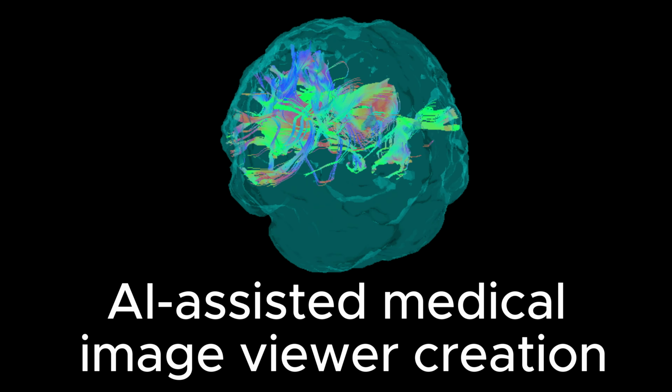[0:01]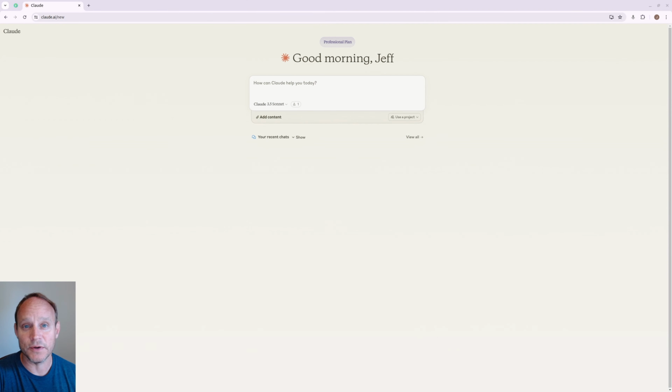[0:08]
Alright, so today I'm going to go over creating a simple medical viewer using Claude AI. I found this to be extremely helpful for code generation and code debugging. About 15 years ago I created a medical imaging program to look at some DICOM images, scroll through them and do some basic image manipulation.
I found that some of the other software packages at the time weren't very helpful and I wanted to add some extra functionality, and it was extremely difficult to get anything running. I had used C++ and some software packages called ITK, VTK, and Qt, which were very powerful but very difficult to get working correctly. And so today I'm just going to show how easy it is to get something up and running very quickly, even if you don't have a lot of experience with coding.
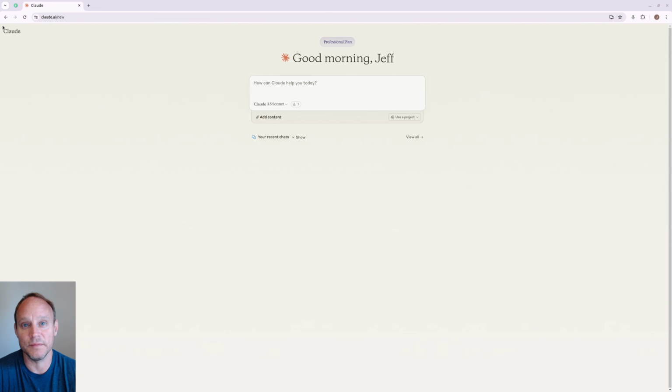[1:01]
But I'm going to be using my Ubuntu setup today, and Claude tends to default to using Python for most of its recommended code, or something like HTML or React if you do web development. But this will show today how we can get something very simple going and how you can get an idea up and running pretty quickly.
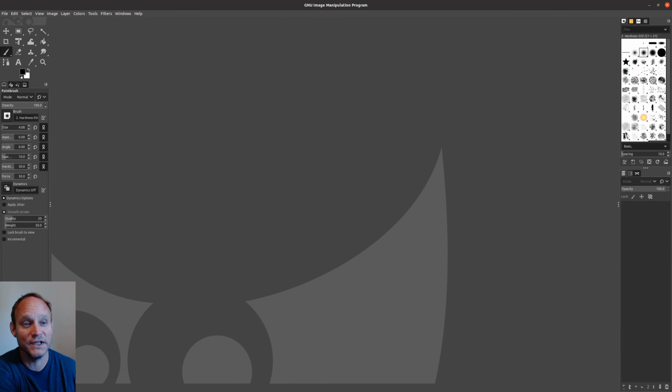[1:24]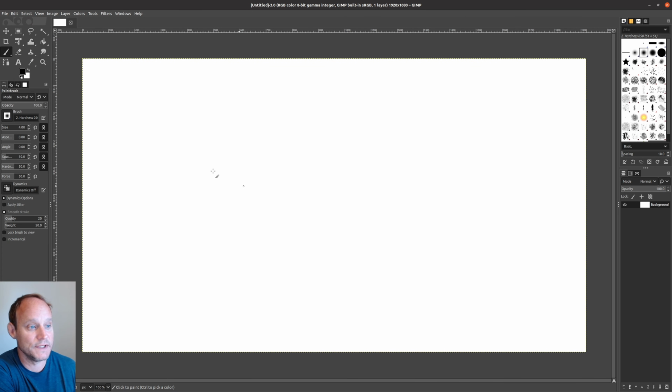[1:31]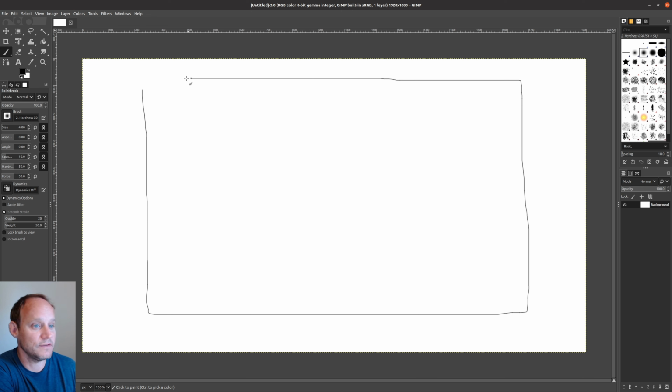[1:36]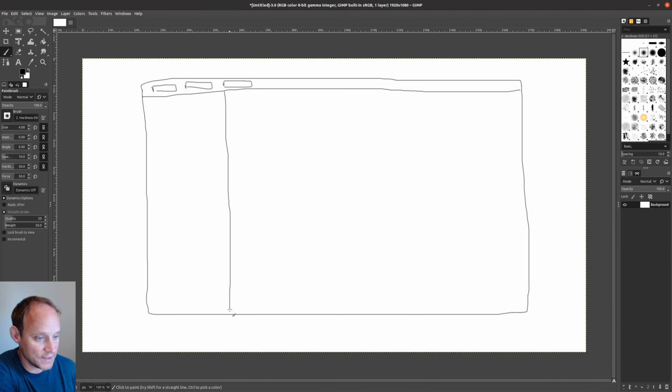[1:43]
So first, to start, I'm actually just going to draw what I want my program window to look like. So I'll use GIMP to do this. So we're just going to have the main window, something like this, and then up at the top we're going to have a bar that's going to have some buttons for whatever we want, and then we're going to have a left-sided window pane that's going to have patient study series, kind of in a tree structure, and then this main right-sided window is going to actually show the image.
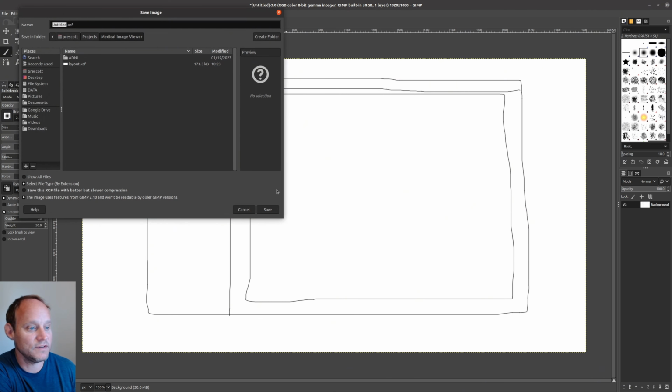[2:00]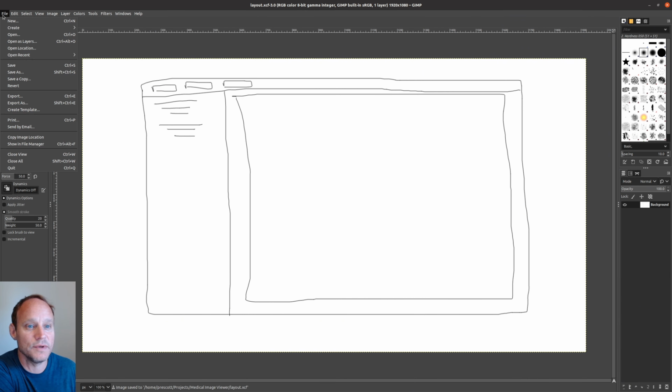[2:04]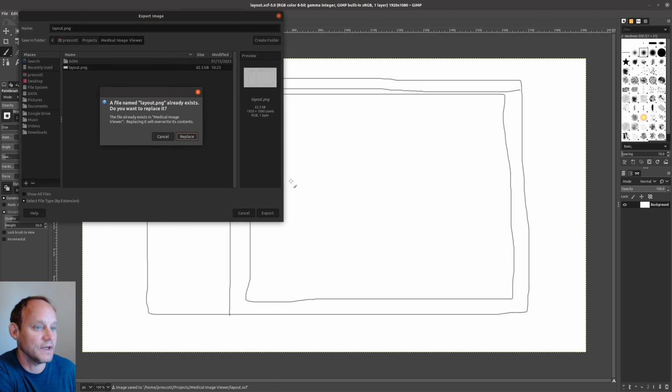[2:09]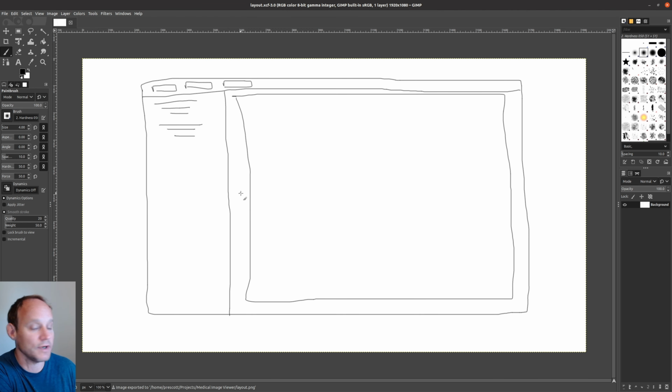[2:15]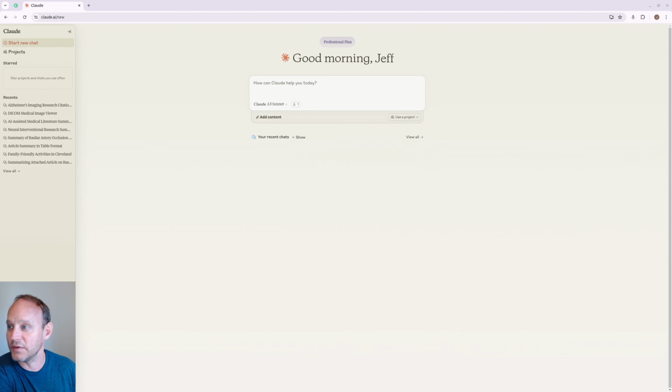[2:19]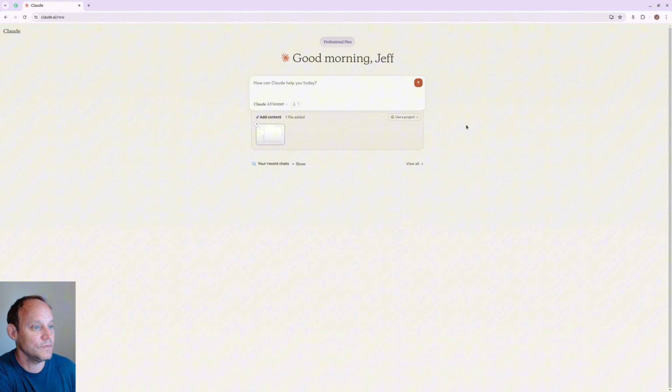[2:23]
So we're going to save this, and we'll just save it as layout. Let's replace that. Then we're going to do export. We'll save this. I drew an image previously that was pretty crappy looking, so do this. So that's what our layout's going to look like. So we can come to the Claude window and we'll drag this layout into the website here.
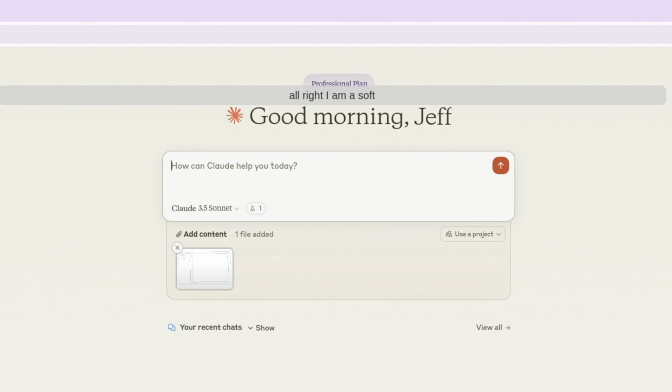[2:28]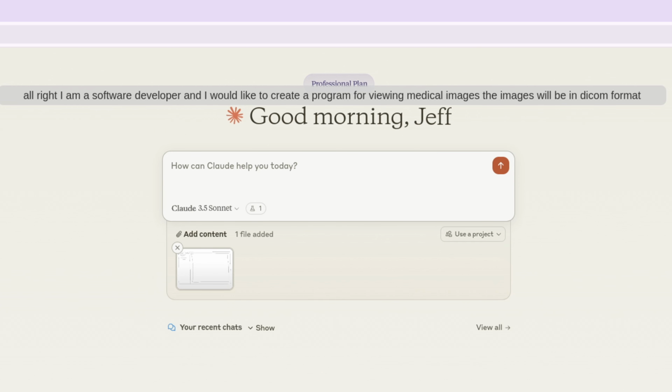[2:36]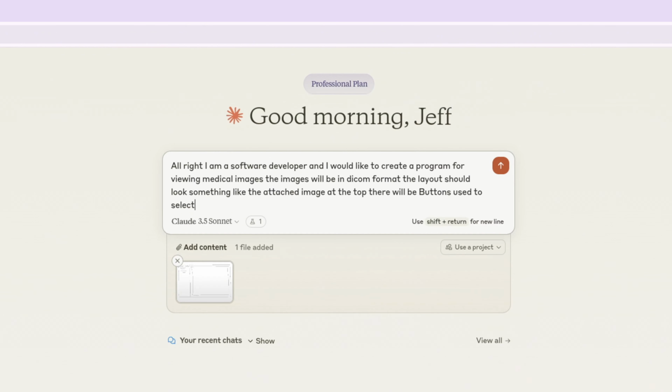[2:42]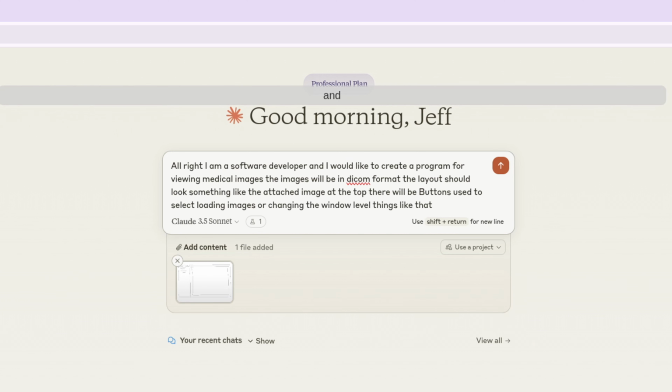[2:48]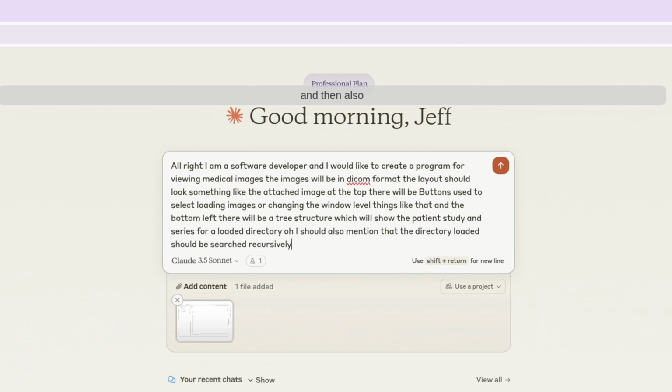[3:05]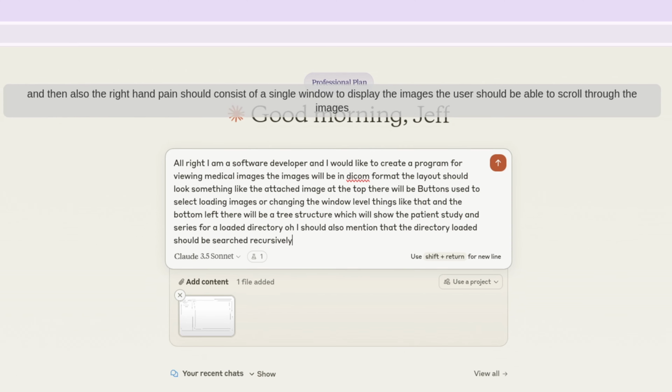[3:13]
And then, alright, I am a software developer and I would like to create a program for viewing medical images. The images will be in DICOM format. The layout should look something like the attached image. At the top there will be buttons used to select loading images or changing the window level, things like that. And on the bottom left there will be a tree structure which will show the patient, study, and series for a loaded directory. Oh, I should also mention that the directory loaded should be searched recursively. And then also the right hand pane should consist of a single window to display the images. The user should be able to scroll through the images using the center mouse wheel.
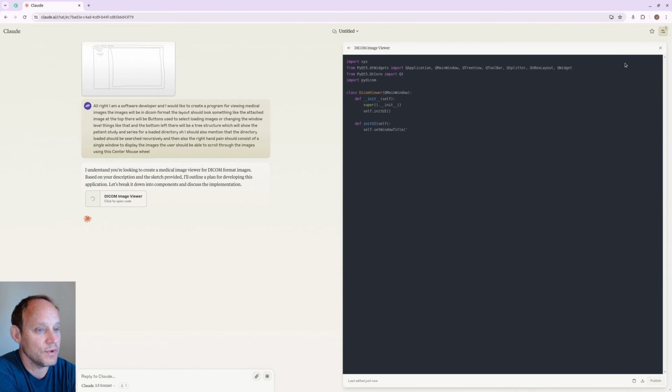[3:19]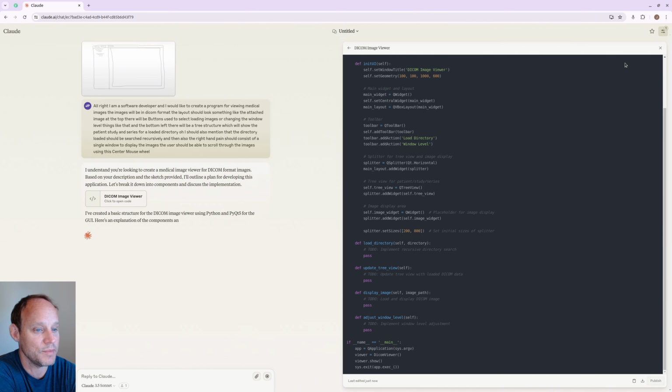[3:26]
And you'll notice that I don't do any formatting for the input. I don't say period, I don't put question marks in, I don't even fix any possible typos. I just speak like I normally would. Claude does a really good job of cutting through all the text garbage and figuring out exactly what I want.
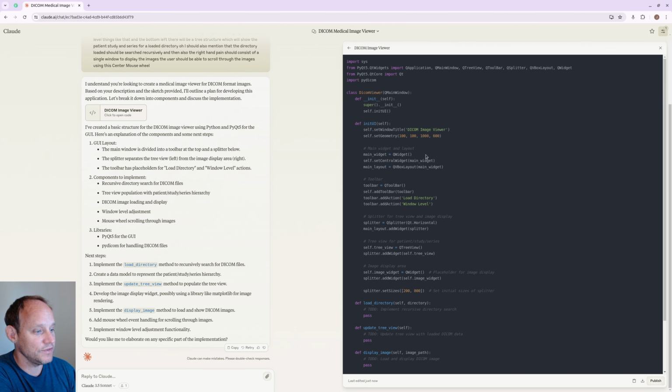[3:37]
So here we have a simple program here, but you see here Claude actually doesn't implement any of these things here. Load directory, update tree view, display image, adjust window level, anything like that. So let's go ahead and tell it to do that. Could you implement all the methods in the script? Here we go. So it implements all these methods: load directory, search DICOM files, update tree view, display image, adjust window level, on mouse wheel.
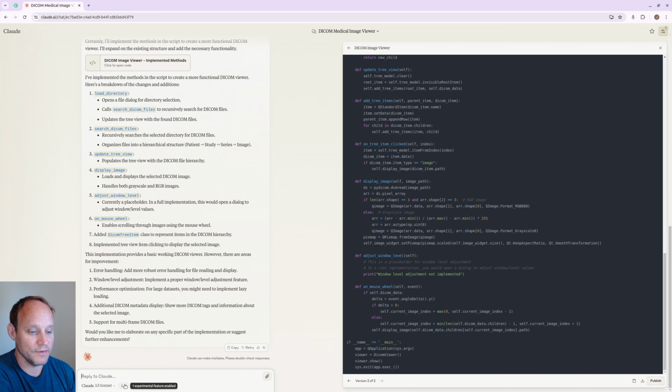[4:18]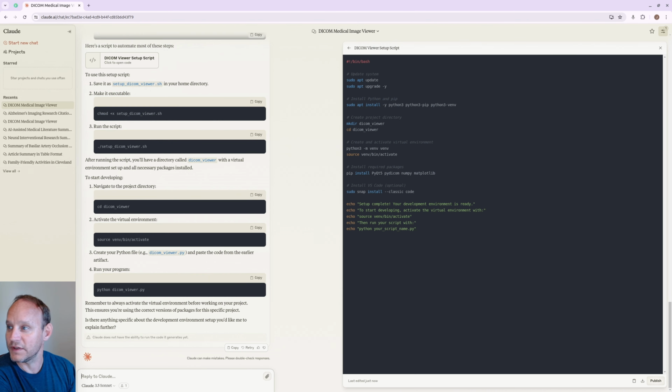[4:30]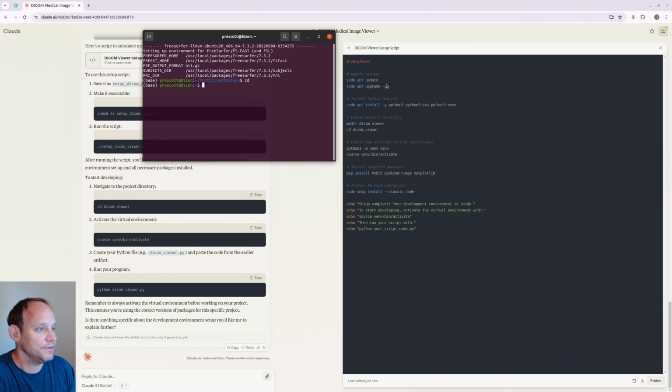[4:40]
So those are all the methods that are required for what we requested in our initial prompt. But let's also go ahead and show how we can set up this development environment if we're not familiar with Python. So I'm not very familiar with Python development. Could you show me how to set up a development environment in order to implement this program? I am using Ubuntu. Well, let's just go ahead and do this. I already have a development environment set up, but let's go ahead and do this. So I'll bring this over here. Alright, so let's just go ahead and run these steps. I don't really need to do everything here, but go ahead and do it.
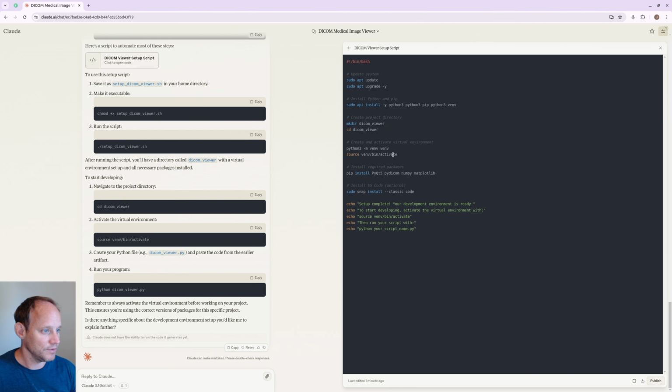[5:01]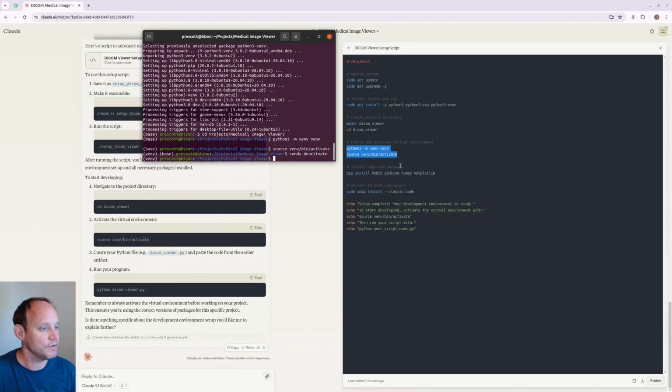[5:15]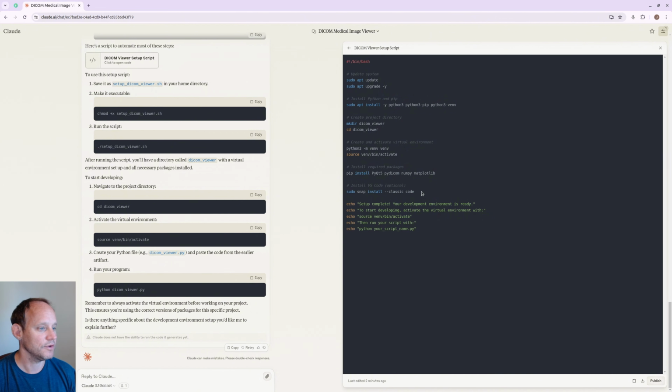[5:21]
Alright, so let's go ahead and install that. Let's go ahead and go to my project directory that I have set up. I know you're not supposed to use spaces in Linux directory structure, but whatever. Well, we don't need to make that directory, I don't think. Let's just create a virtual environment. Here we go. You see I already have this other environment here. That's because I'm using Conda also, but let's just do that. Conda deactivate. Okay, so now we're only in the virtual environment. Let's see here, pip install. All right, I already have VS Code installed, so we don't need to worry about that. But anyway, so that's setting up our development environment there.
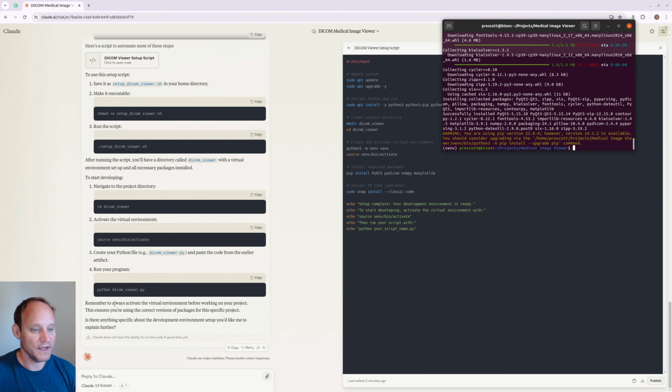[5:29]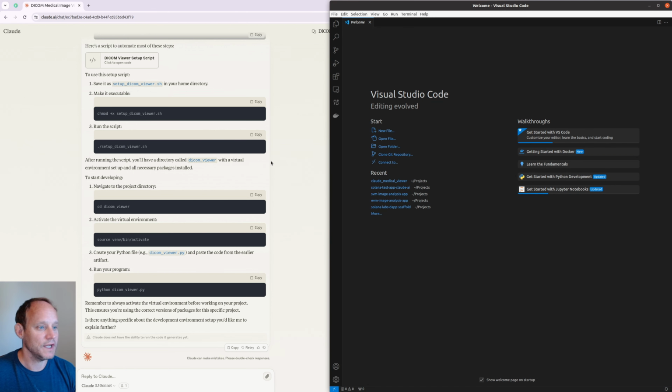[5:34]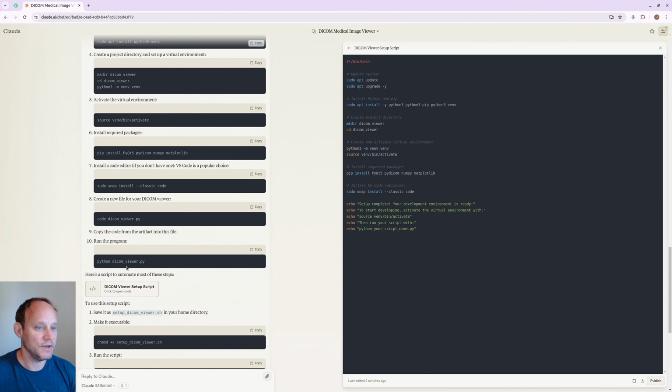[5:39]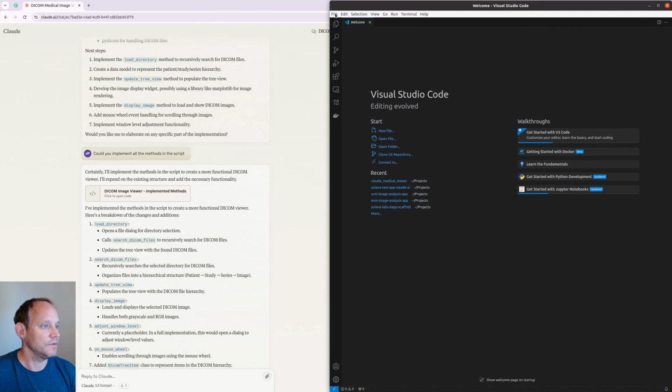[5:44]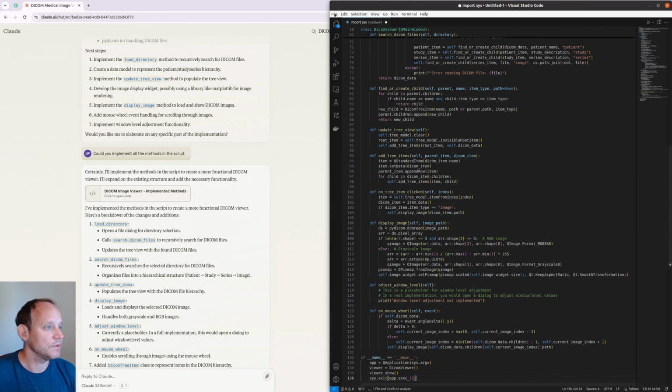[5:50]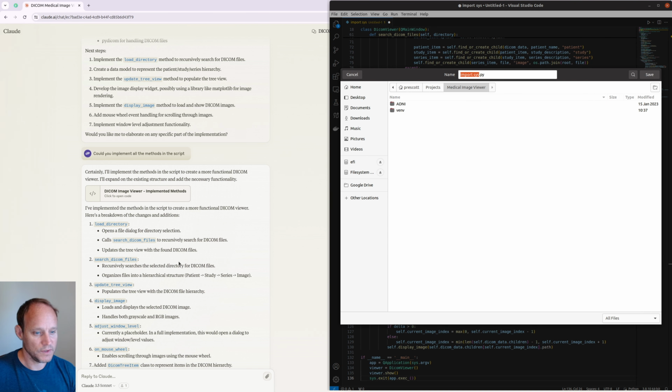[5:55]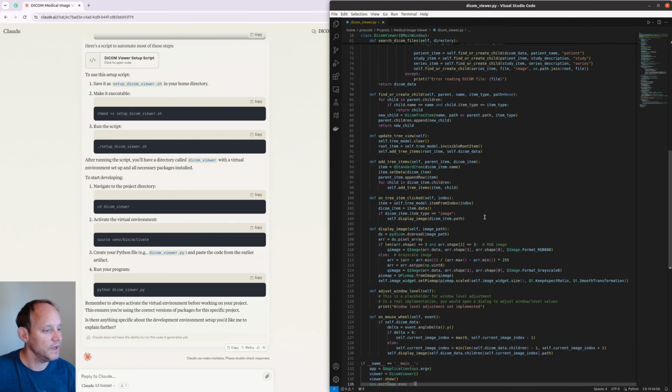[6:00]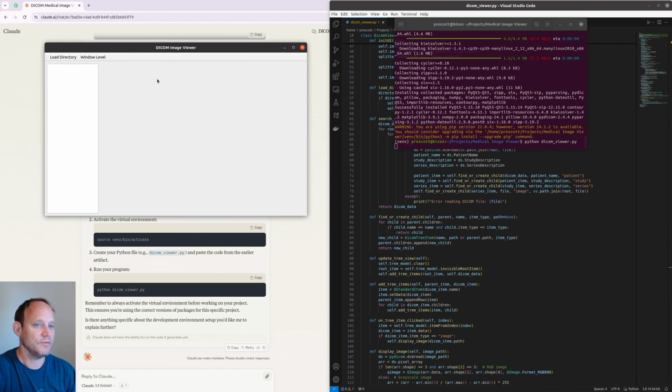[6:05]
So next we need to actually create the Python file and save it. So we will use VS Code for that. Here's our Visual Studio Code. Now we're gonna have to go up here and reload everything here. So we'll copy that. We will create a new file. We'll create a Python file, and we will save it. Let's do projects, DICOM viewer. Let's do that. All right. So here's our code. Let's go ahead and try it. All right. So here is our DICOM viewer right here.
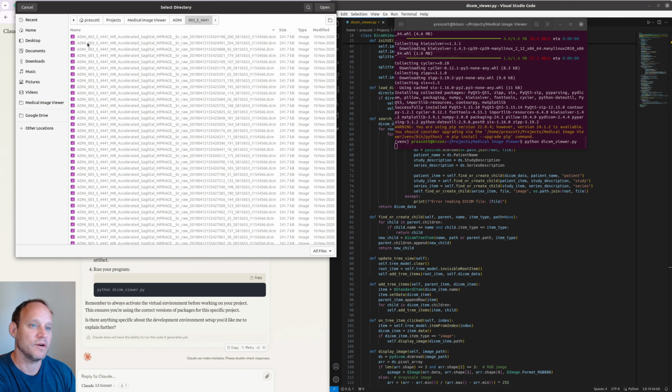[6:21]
So there's buttons here. Load directory. Let's see how it works. Load directory. I have this directory with some images from the Alzheimer's Disease Neuroimaging Initiative, showing a couple of subjects there with some different studies. So we'll go ahead and load that, open that.
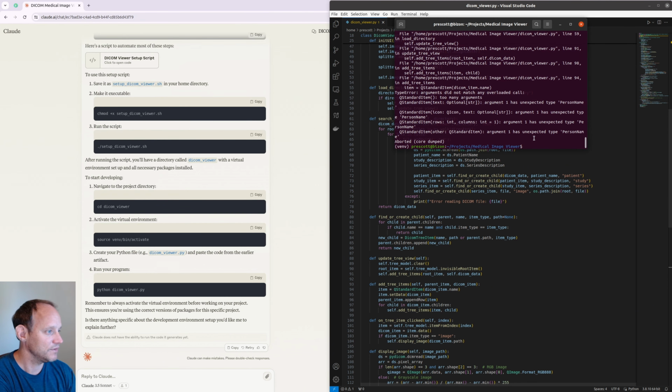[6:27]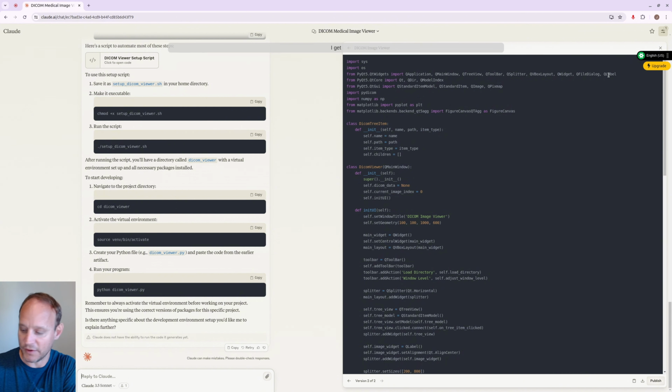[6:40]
Oh, see, it crashed. So we got "argument one is a person name." So let's see here, QStandardItem. So we do have an error. Let's go ahead and put this in here. Copy that. I get the following error.
So it suggested some fixes based on the error that I gave to Claude, stating that you have to convert the name of the patient to a string in order to correctly call the relevant method. Sometimes it's a little bit difficult to fix everything up, where other methods remain the same, the rest of the code remains the same. So we're just going to tell it to print the entire script out. Can you print out the entire script?
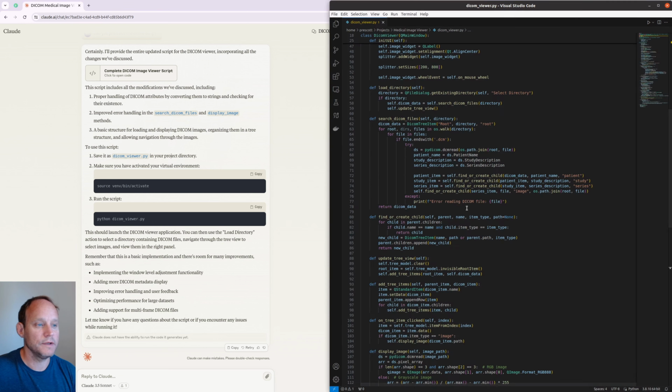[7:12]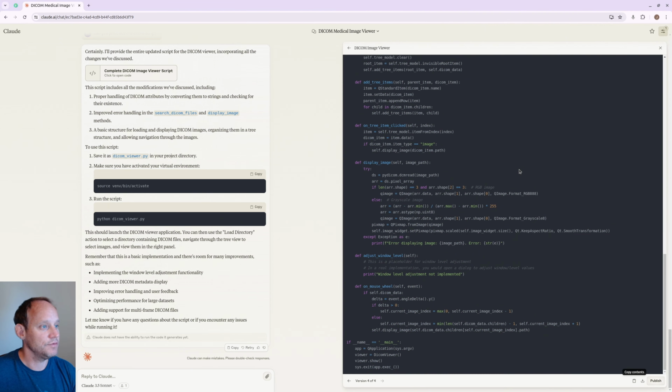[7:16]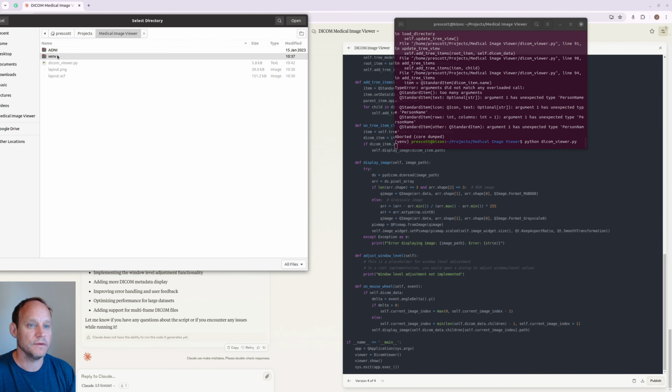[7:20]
We have what we need. Let's go ahead and paste everything, save the new file. Let's go ahead and run it, see what happens. So load directory, add new directory, and we got a root. So we've got these patients, and you can see that they are separated into study, series, and all the instances or images. So great.
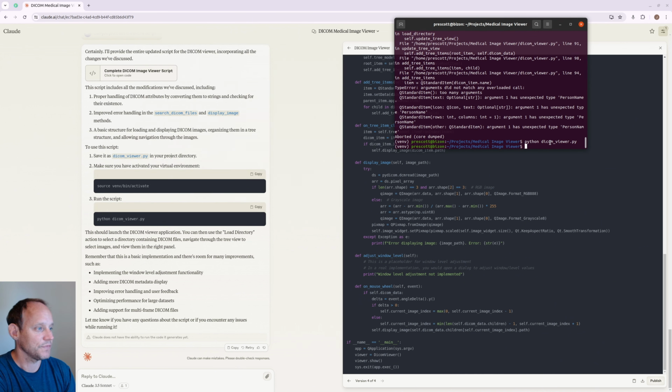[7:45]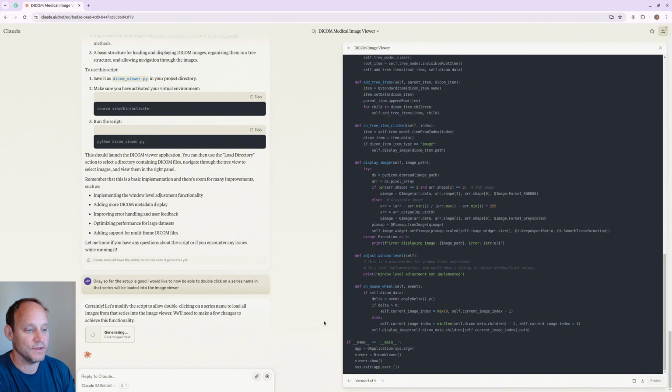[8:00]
Great. Now we have to make it so that if we double click on the series name, it will load. So let's go ahead and implement that functionality. We'll close this. Forgot to specify that in the initial code. So far the setup is good. I would like to now be able to double click on a series name, and that series will be loaded into the image viewer. You see there's a typo here. I didn't fix it, and it figures out what I want anyway.
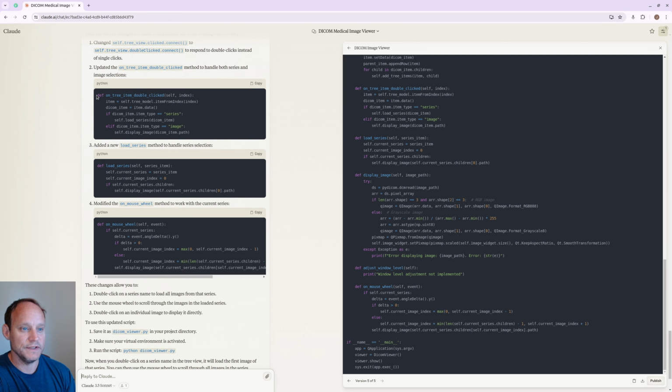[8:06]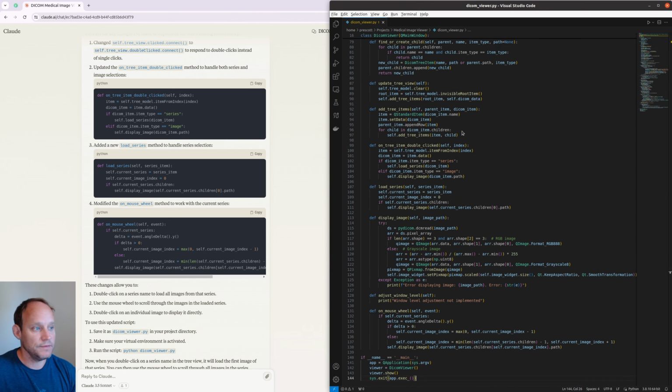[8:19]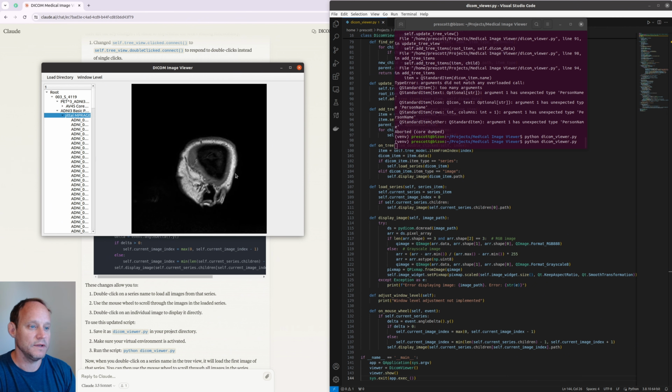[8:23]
So here you can see that there's now an implementation of on-tree item double clicked, then the load series, and mouse wheel to work with the current series to scroll through it. Let's see if this all works. Okay, we'll copy here. Save our new file. All right, so it loads that. It's an amyloid PET. Here is the T1, but you can see everything's out of order here. So we gotta go back and fix that now.
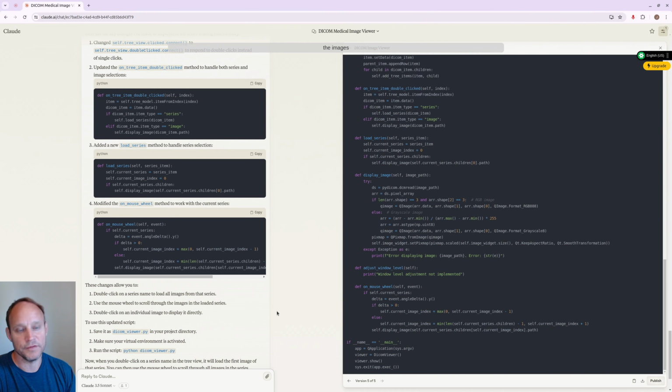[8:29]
The images are out of order. Can you put the series images in the correct order? That should be good enough to figure out what I need. So the program Claude implemented now sorts the images by, I think that says instance number here. It falls back to the acquisition time if there's no instance number key available, which there should always be an instance number, more or less. But here we go. So let's go ahead and try this now.
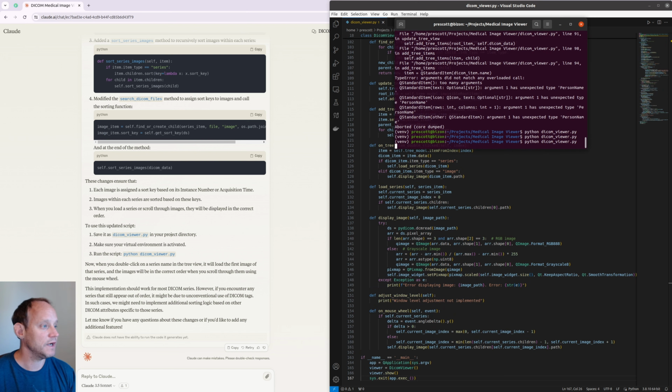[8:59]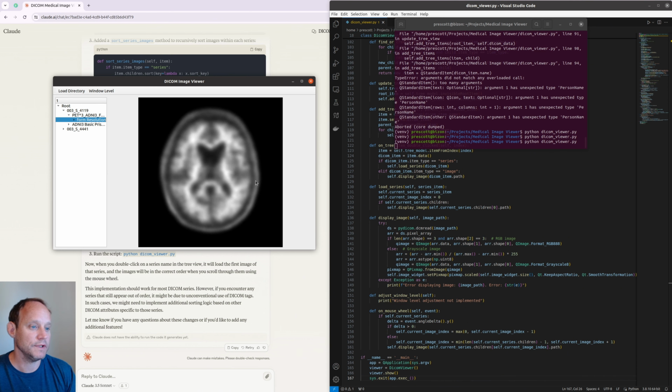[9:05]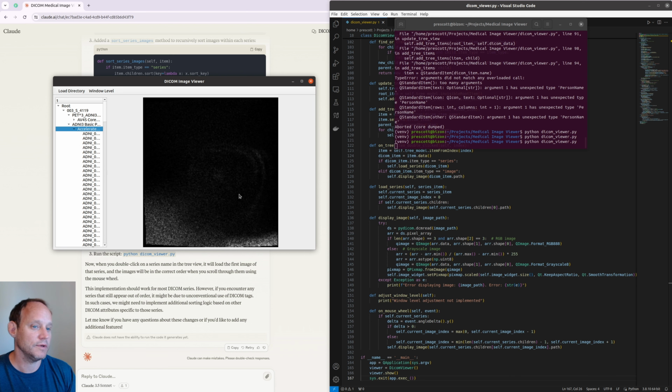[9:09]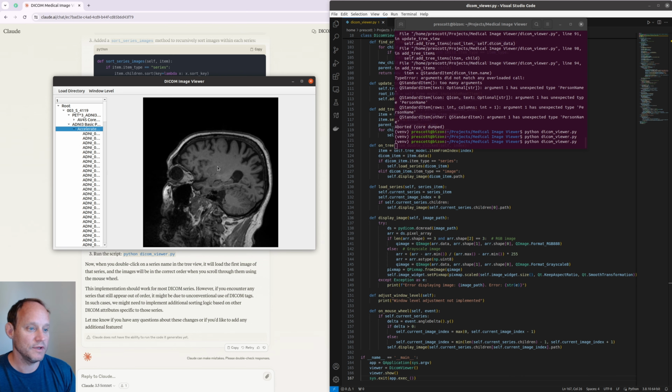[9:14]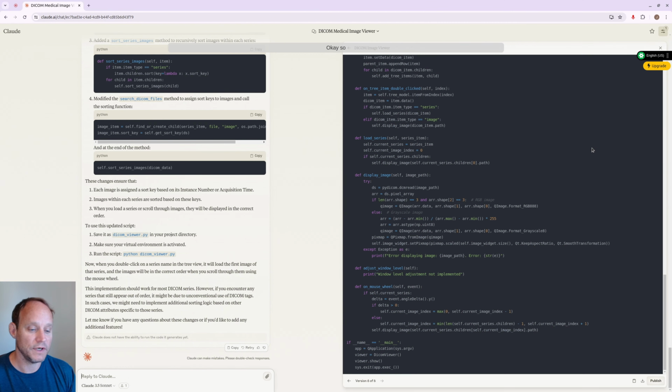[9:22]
So save the new file, and here's our new DICOM viewer. Load directory, open. There we go. So that looks pretty good. Now let's go ahead and look at. There we go, and there it is. And I'm scrolling with my mouse wheel, so that's pretty good. Now one thing is we don't have this window level implemented. Let's go ahead and do that. One last simple thing to do, hopefully simple. So far everything works great.
I would now like to implement the window level. In order to implement this, I would like it so that the user can hold down the left mouse button and drag the mouse, and the window and level will be dynamically adjusted based on mouse dragging. So it implemented the method where left-right mouse movement will adjust the window width, and then up-down mouse movement will adjust the window center. But in the code you can see here it says keep other existing methods. So I would just like to be able to copy and paste the whole thing. So print out the entire script.
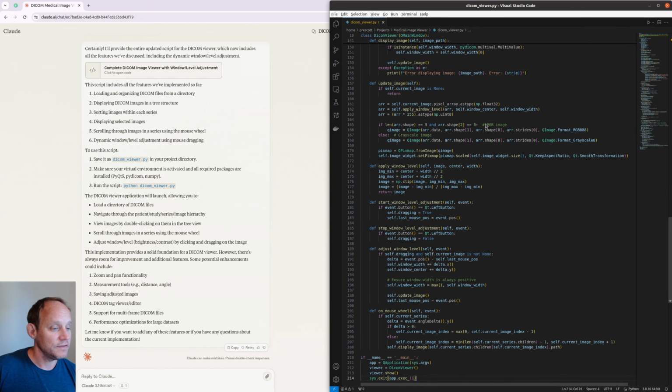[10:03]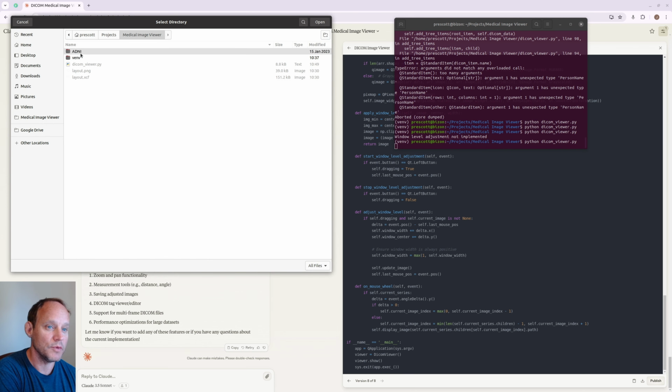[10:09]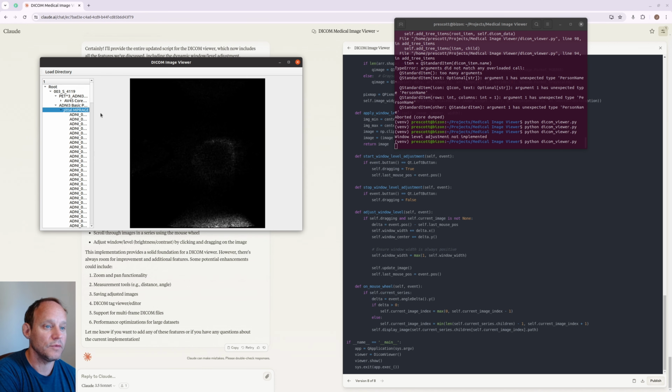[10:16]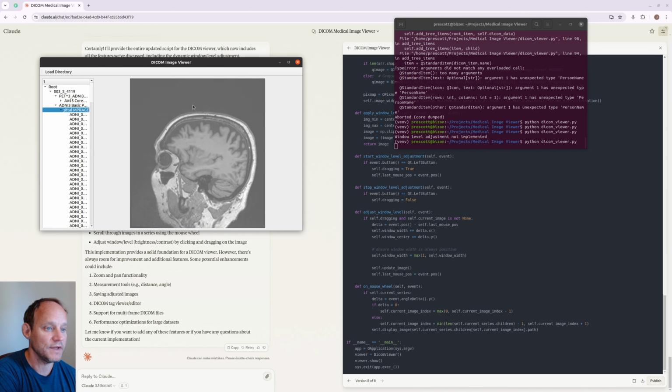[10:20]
So here we have the entire script. So we'll copy that, paste and save. Now let's run it. Oh, look at this. We're missing our window level button. It removed it. We don't need that anymore. We'll just load the directory. Let's go ahead and load this T1. We'll scroll to the middle, and then I'm holding my left mouse button down, dragging. There you go. Window level adjusted.
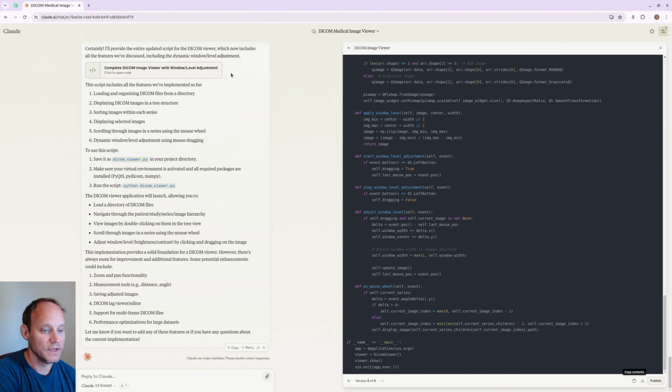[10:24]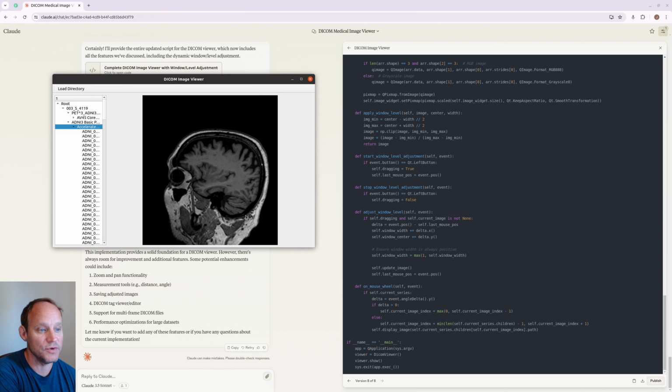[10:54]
There it is. In addition, after printing out the entire new script, it gave some info on how to run the script again, what features we've implemented, and then also made some suggestions for new things to do: zoom and pan, measurement tools, save adjusted images. This is really good. So we could probably do all these things if we really wanted to, but this is just demonstrating that we can get a fully functional image viewer with just some simple requests.
Now you can see actually I'm scrolling through here, and the window level is not carried between the images. We could just ask for that to be done, and it should be done without a problem. But there we go. All right, well, now we've implemented a simple image viewer, which 15 years ago took me forever to do. It was extremely difficult to learn code, get everything set up, but here we can just have Claude create one for us, and if we have any questions about setting up the development environment, what languages to use, anything like that, we can also ask that.
And in addition, at the very end, there are suggestions made by Claude about how to make the program even better. So there we are.